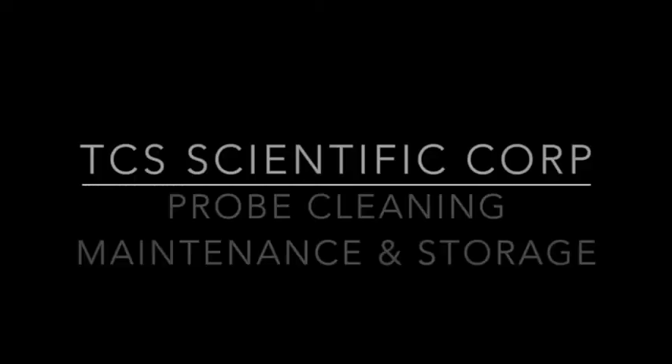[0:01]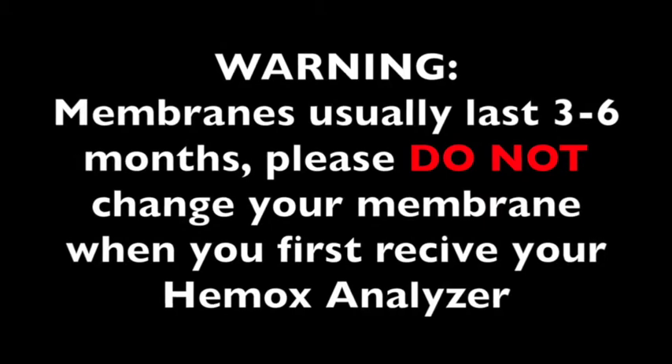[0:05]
How to perform probe cleaning, maintenance, and storage. Membranes usually last 3 to 6 months. Please do not change your membrane when you first receive your HemOx analyzer. It is a fresh membrane.
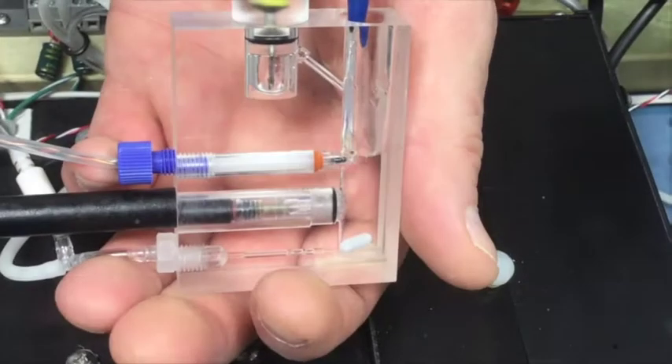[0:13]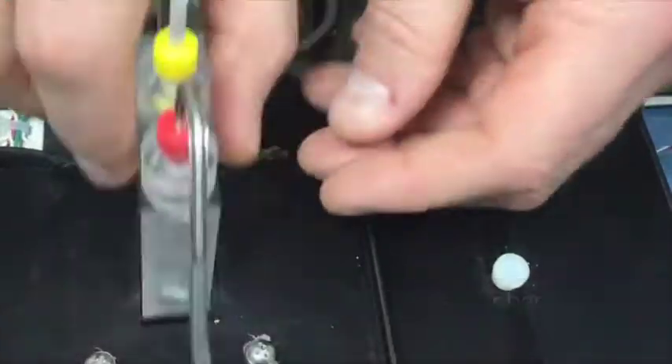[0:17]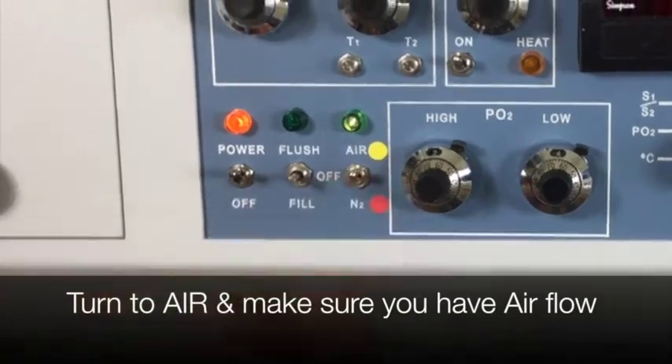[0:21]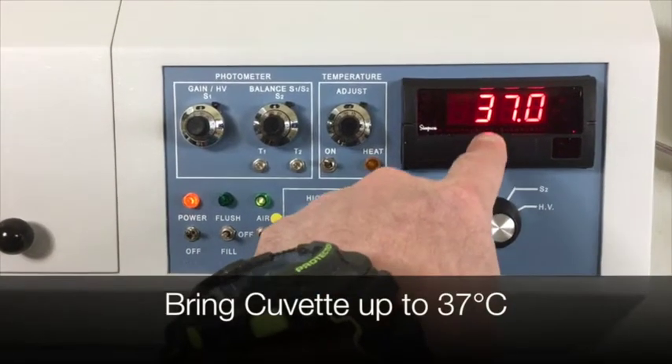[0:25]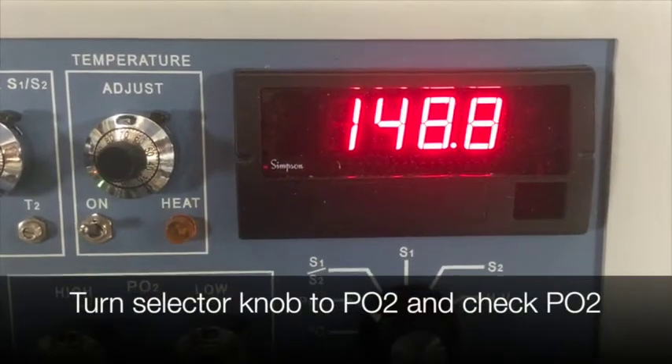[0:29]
How you know your membrane is going bad. Fill your cuvette with distilled water and make sure that your stir bar is in and stirring. Make sure that you have your switch turned to air and that your air is on. After about 30 minutes, your temperature should have stabilized at 37 degrees Celsius. Now turn to PO2 and make sure that that is stabilized as well.
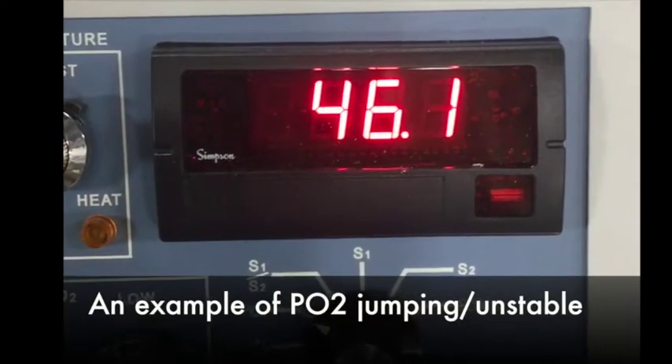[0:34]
This is an example of a PO2 jumping or unstable. Do not remove the oxygen probe from the cuvette. In fact, it is better and easier to do while your probe is still in the cuvette. Just be careful not to touch or hit the back of the probe, the brown part that is sticking out of the cuvette.
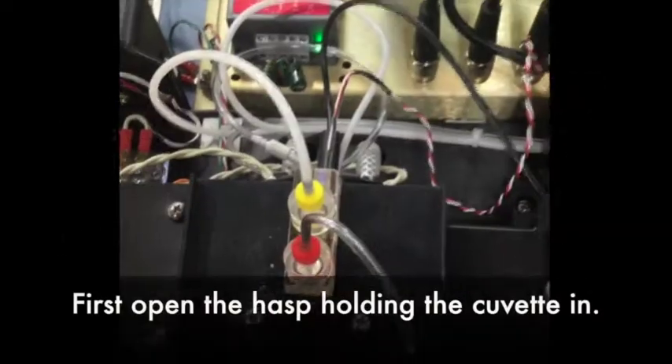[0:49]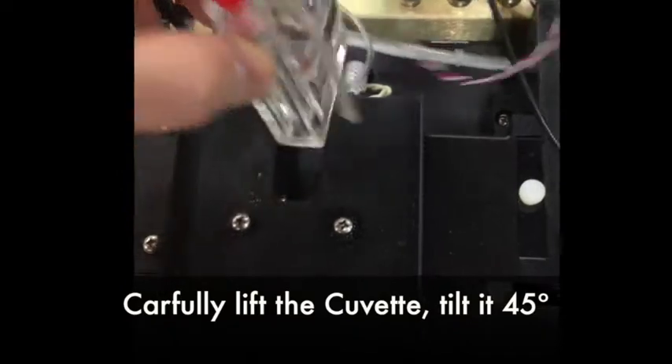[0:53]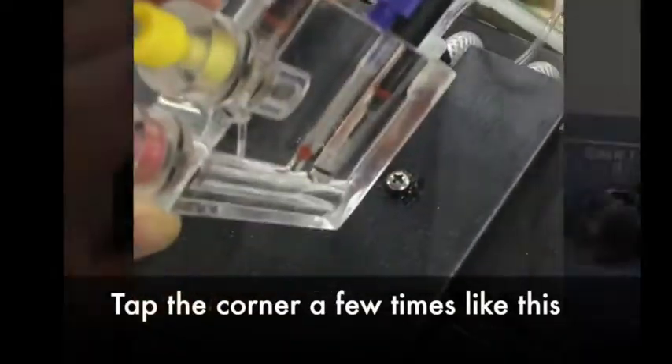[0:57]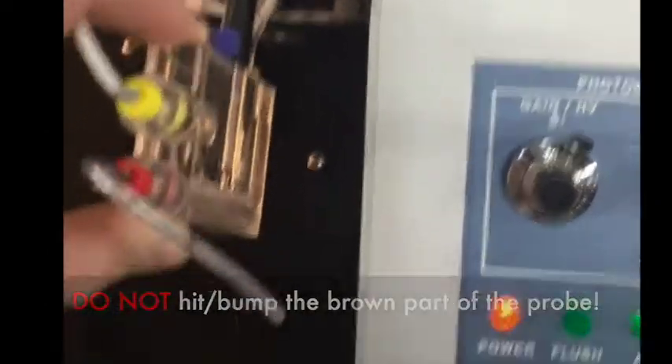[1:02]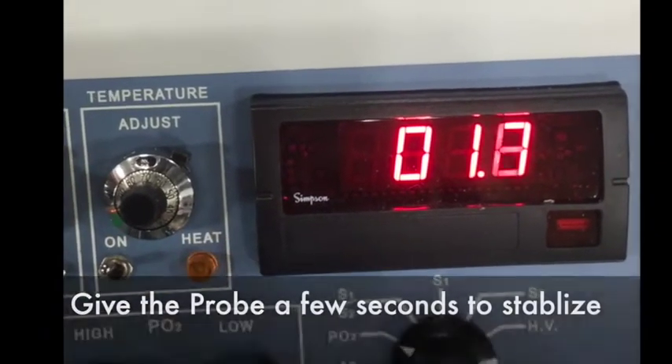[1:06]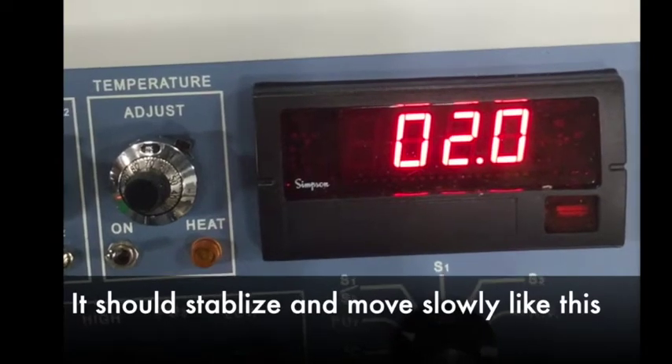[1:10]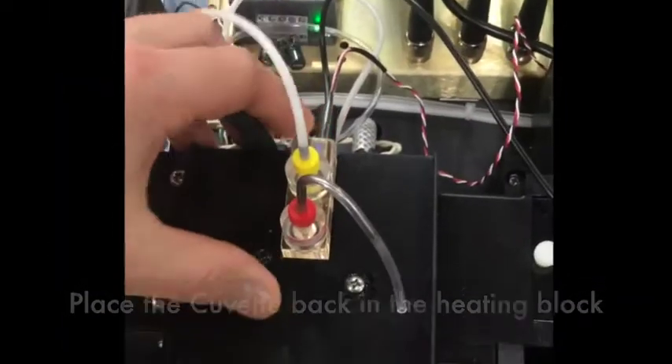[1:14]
First, open the hasp holding the cuvette in. Carefully lift the cuvette out and tilt it 45 degrees. Tap the corner a few times just like this. Do not hit or bump the brown part of the probe. Give the probe a few seconds to stabilize. It should stabilize and move slowly like this. Place the cuvette back in the heating block, close the hasp, and you're done.
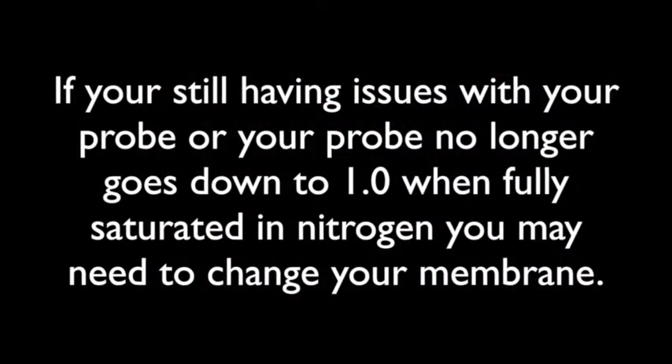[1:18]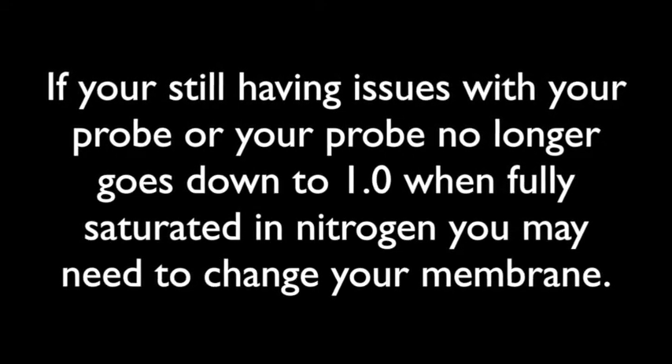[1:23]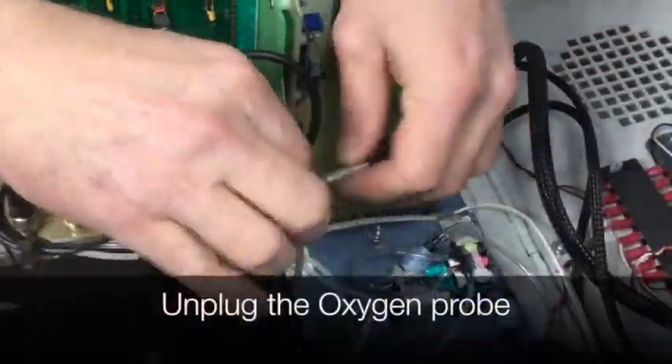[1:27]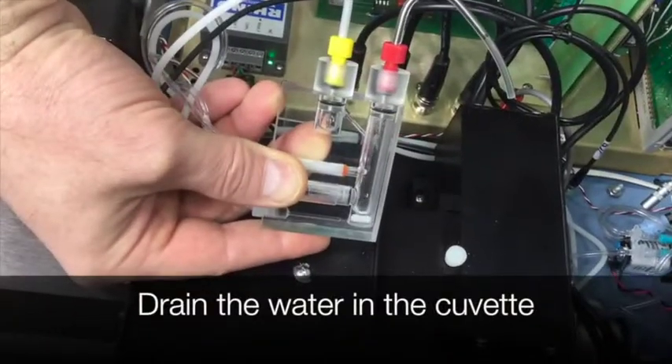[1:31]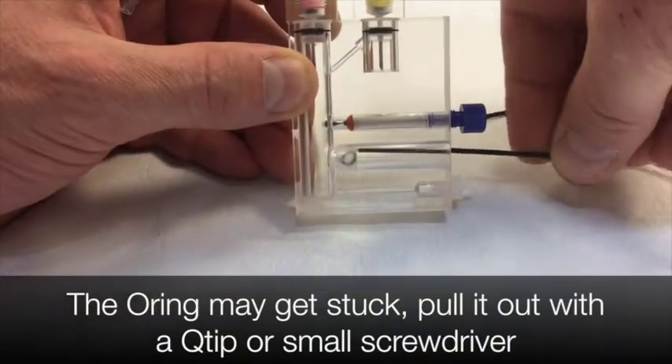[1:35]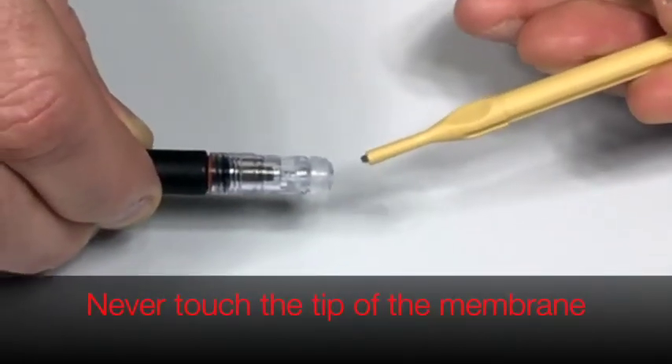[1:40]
If you're still having issues with your probe, or your probe no longer goes down to 1.0 when fully saturated in nitrogen, you may need to change your membrane. Open lid. First, unplug the oxygen probe. Lift the cuvette out of the slot. Drain the water in the cuvette. Remove the probe. The O-ring may get stuck. Pull it out with a Q-tip or a small screwdriver. Never touch the tip of the membrane.
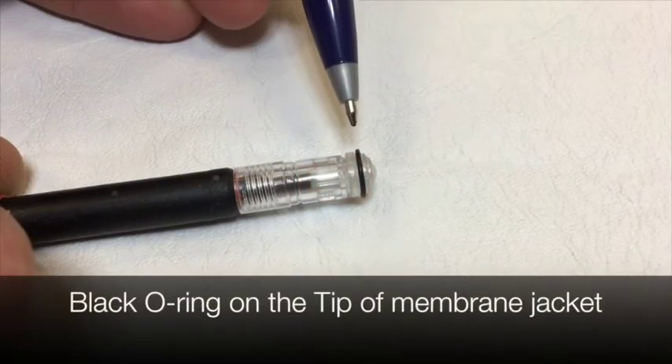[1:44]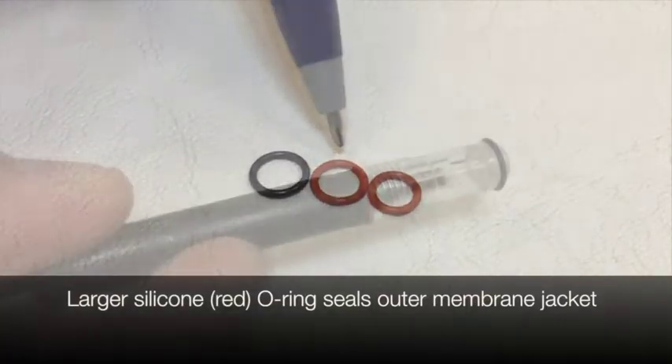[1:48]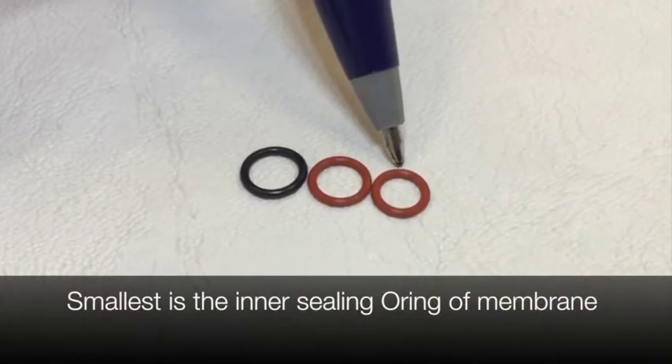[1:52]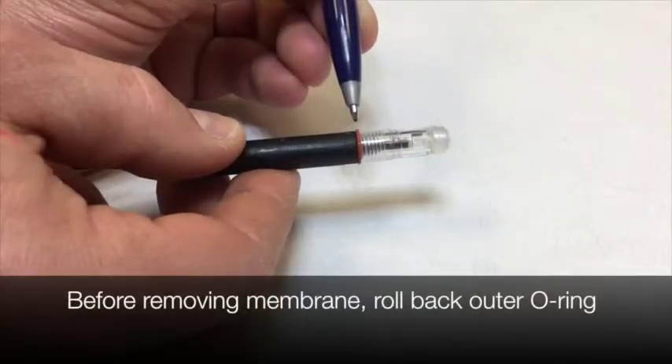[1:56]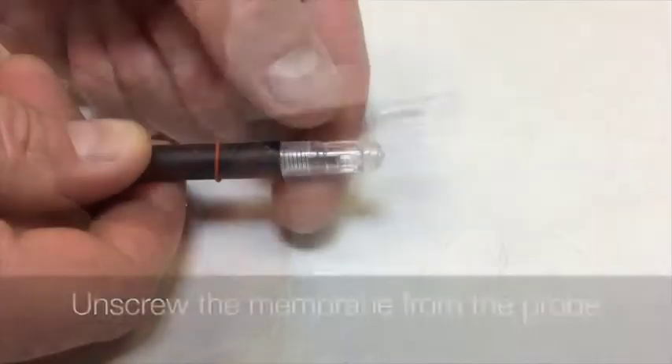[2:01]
There are 3 O-rings for your oxygen electrode. The black one goes on the tip of the oxygen electrode. The larger of the silicone O-rings seals the outside of the membrane jacket. The smallest of the silicone O-rings is the inner seal for the membrane jacket. Before removing the membrane jacket, roll back the larger silicone O-ring. Unscrew the membrane from the probe.
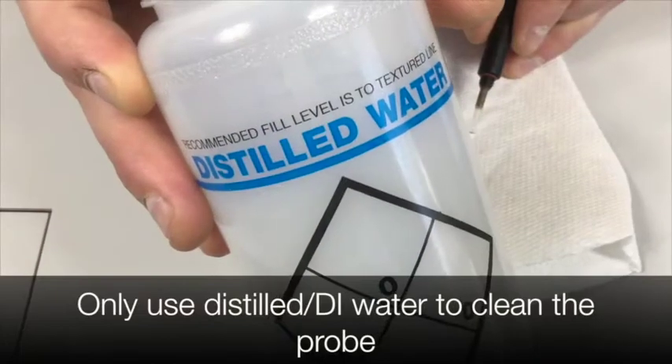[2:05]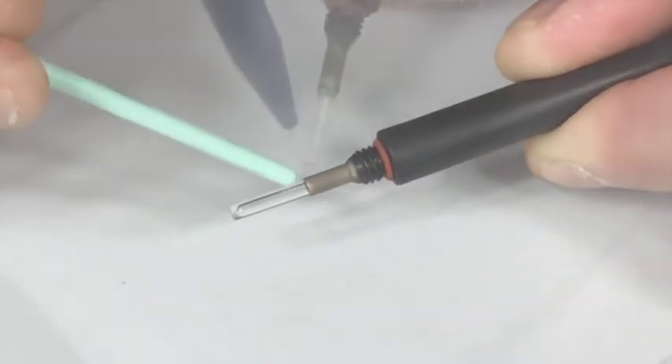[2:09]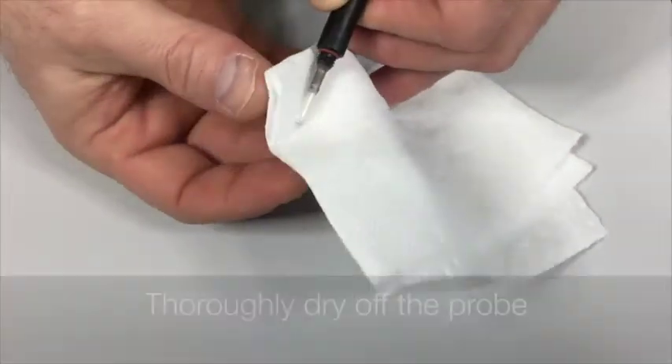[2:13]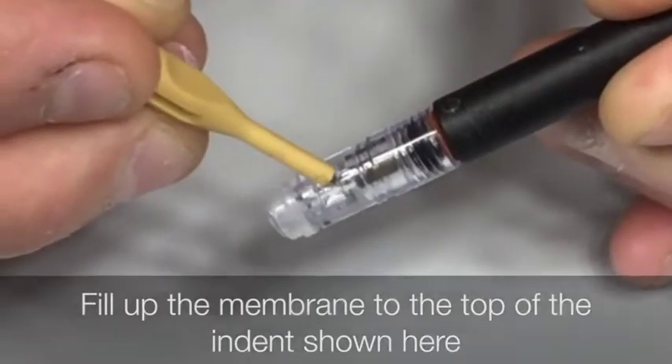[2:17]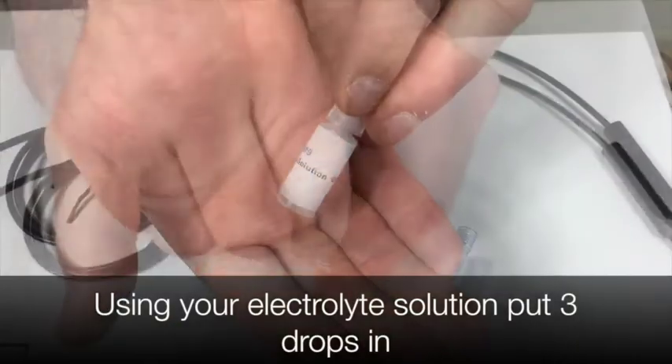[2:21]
Only use distilled or DI water to clean the probe. Never get water in this area. Clean the tip with water. Thoroughly dry off the probe. Fill up the membrane to the top of the indent shown here. Using your electrolyte solution, put 3 drops in.
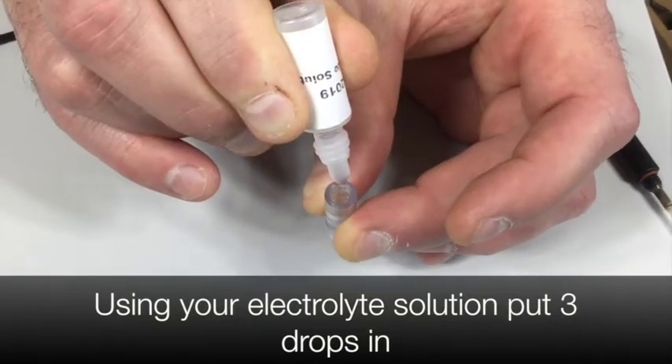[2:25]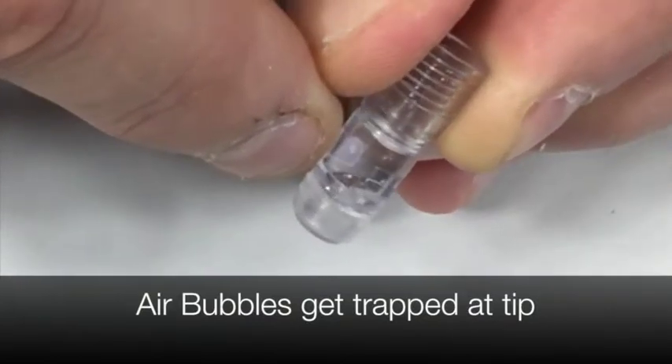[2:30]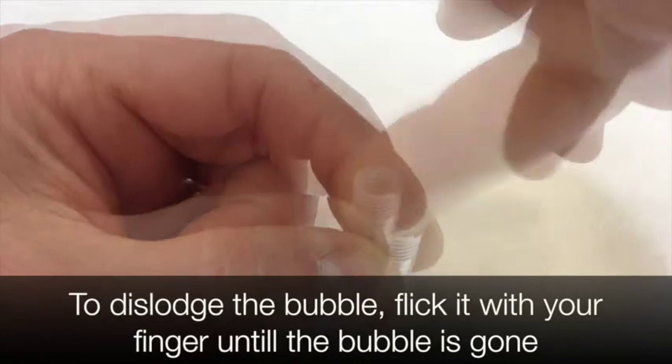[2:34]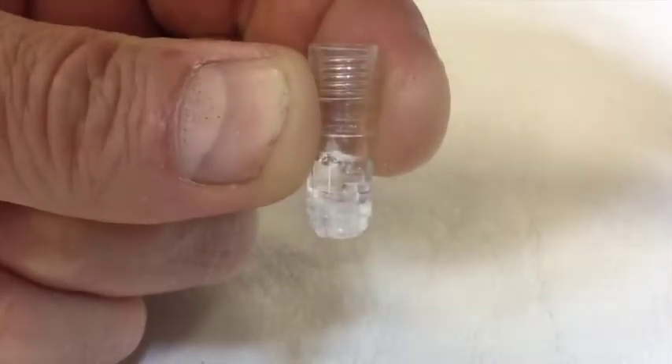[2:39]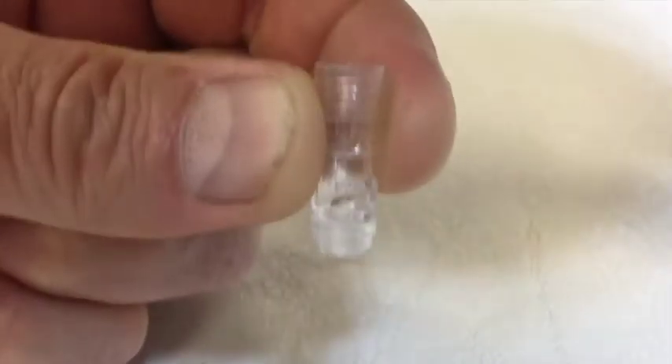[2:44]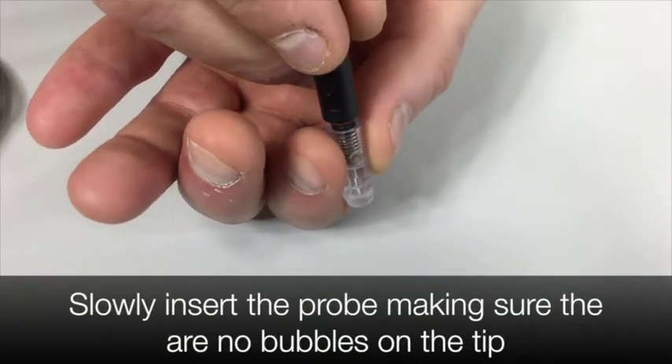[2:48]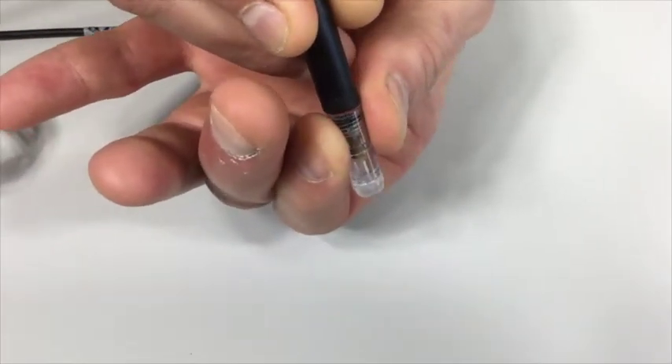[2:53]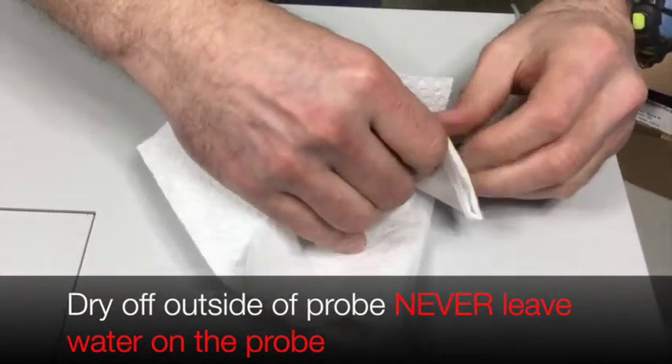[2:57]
You will always get an air bubble trapped at the tip of the membrane. Using your fingernail, tap the top of the membrane jacket until you dislodge all the bubbles as shown in the video. Slowly insert the probe, making sure that there are no air bubbles on the tip. Screw the membrane onto the probe and make sure the solution does not overflow. Dry off the probe. Never leave water on the probe.
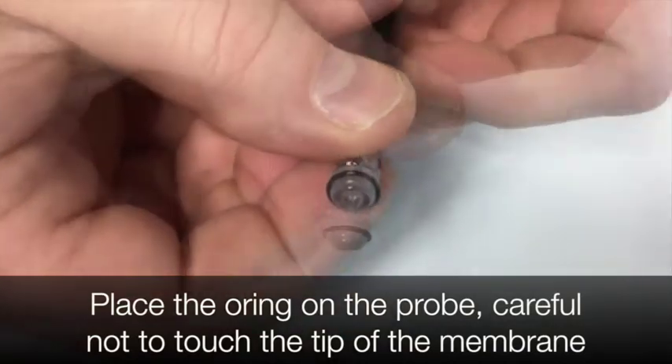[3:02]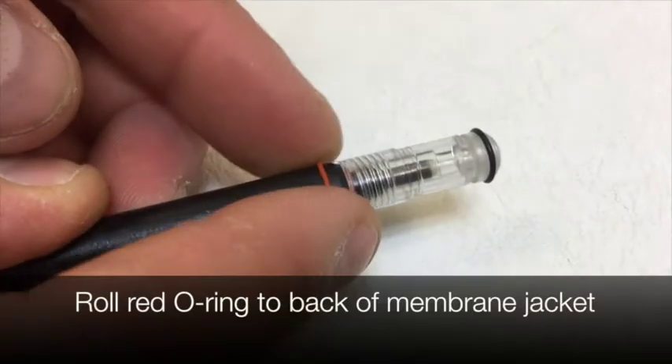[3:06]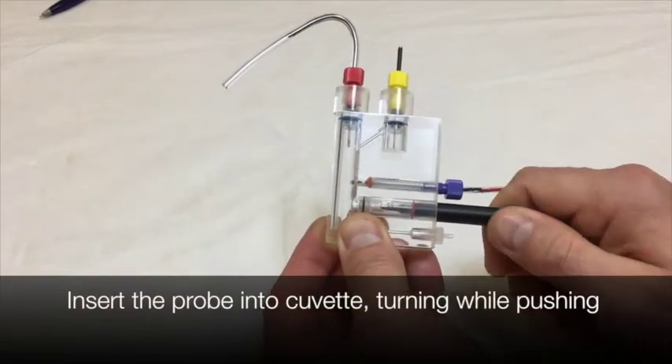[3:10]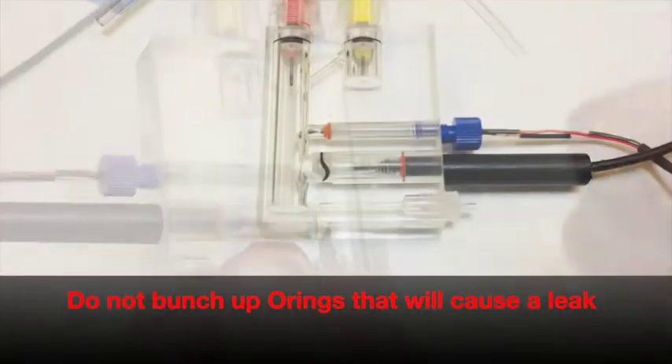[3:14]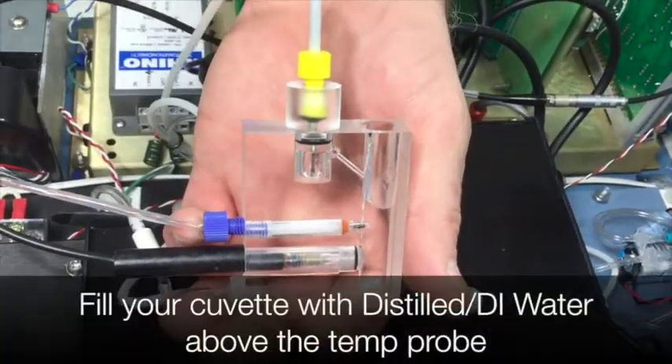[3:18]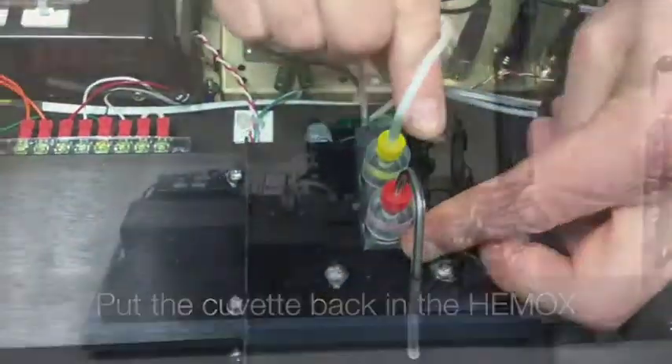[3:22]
Place the black O-ring around the tip of the membrane jacket, making sure not to touch the membrane with your fingertips. Roll the red silicone O-ring forward until it gets into the groove of the back of the silicone jacket. Insert the probe into your cuvette, making sure you turn slowly as you push it in. Make sure that you do not bunch up the O-rings. That will cause a leak. Fill your cuvette with distilled water above the temperature probe. Put the cuvette back in the HemOx.
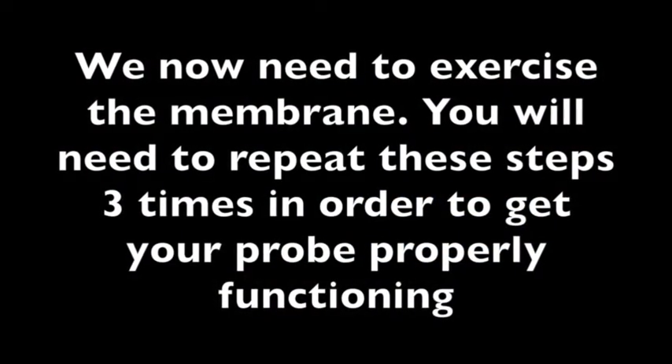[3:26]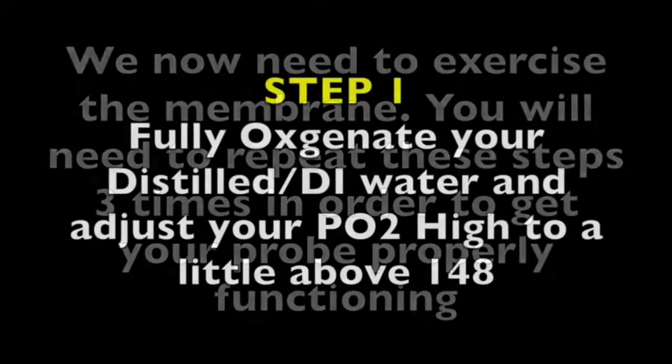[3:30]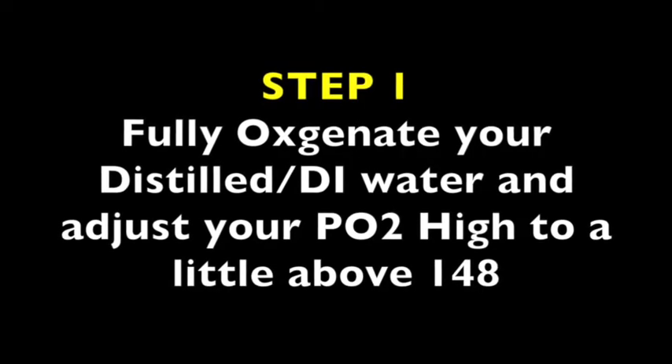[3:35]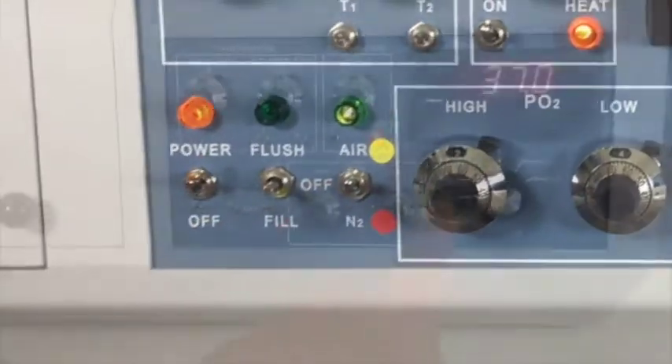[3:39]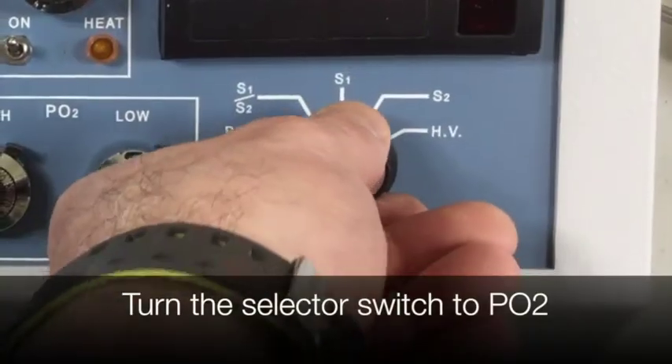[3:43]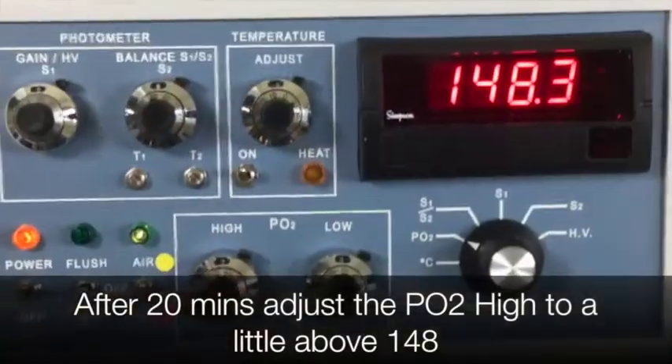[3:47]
Close lid. We now need to exercise the membrane. You will need to repeat these steps 3 times in order to get your probe to function properly. Step 1. Fully oxygenate your distilled or DI water and adjust your PO2 high to a little above 148. Switch to air and oxygenate for 20 minutes. While you're waiting, make sure the temperature gets to 37 degrees Celsius. Turn the selector switch to PO2. After 20 minutes, adjust the PO2 high to a little above 148.
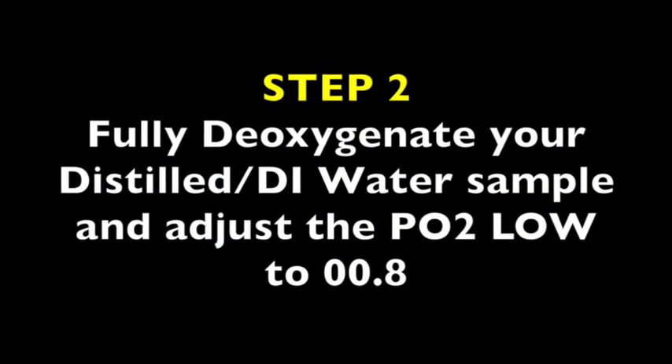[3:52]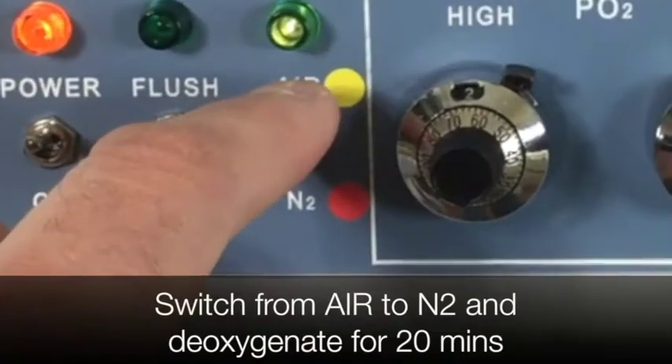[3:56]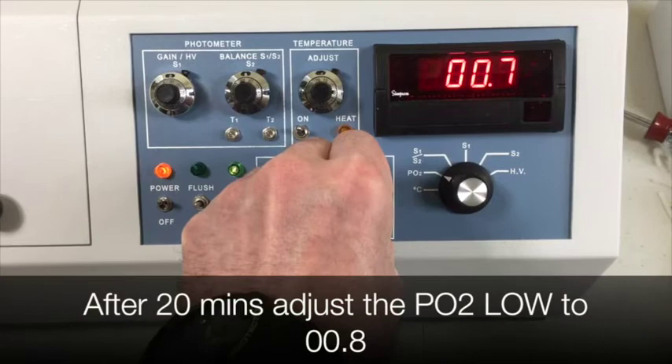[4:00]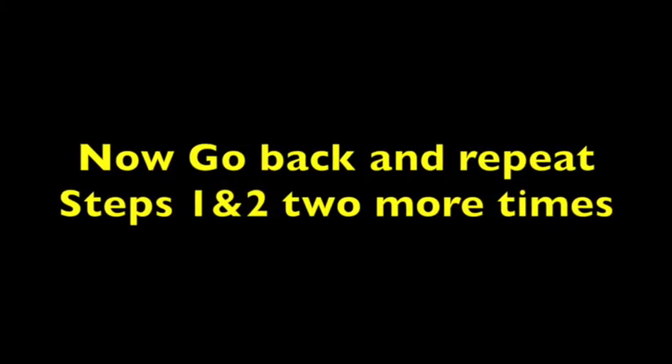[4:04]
Step 2. Fully deoxygenate your distilled or DI water sample and adjust the PO2 low to 0.8. Switch from air to nitrogen and deoxygenate for 20 minutes. After 20 minutes, adjust the PO2 low to 0.8. Now go back and repeat steps 1 and 2 two more times.
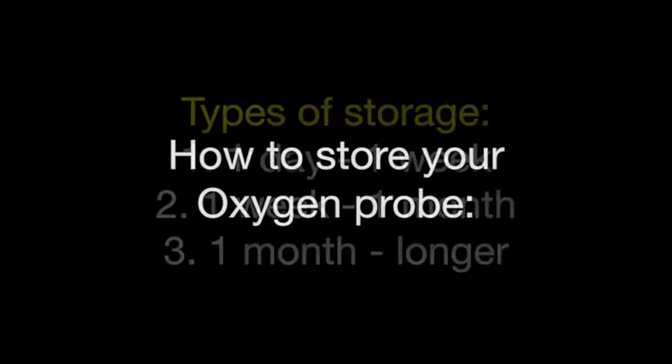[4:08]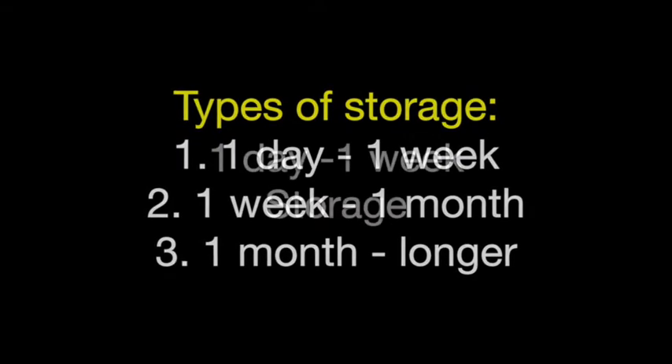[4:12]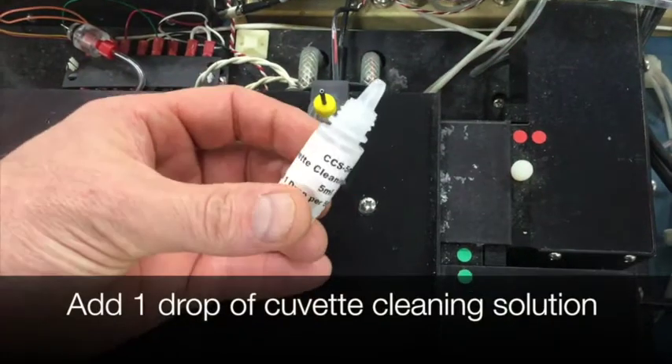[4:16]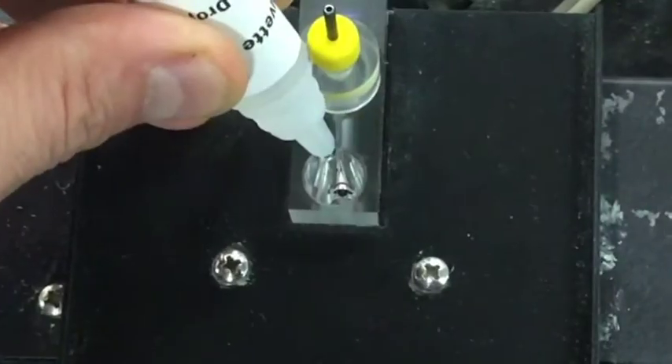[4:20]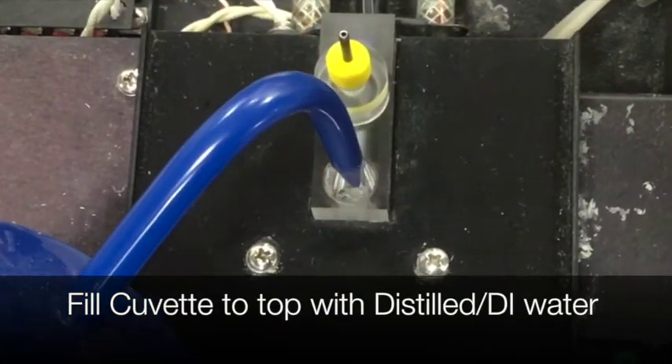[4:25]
How to store your oxygen probe for a long period of time. There are 3 types of storage. 1 day through 1 week storage. Drain the cuvette and make sure there's nothing in it. Then add 1 drop of cuvette cleaning solution. Then fill the cuvette with distilled or DI water all the way to the top of the cuvette and make sure you leave off the cap.
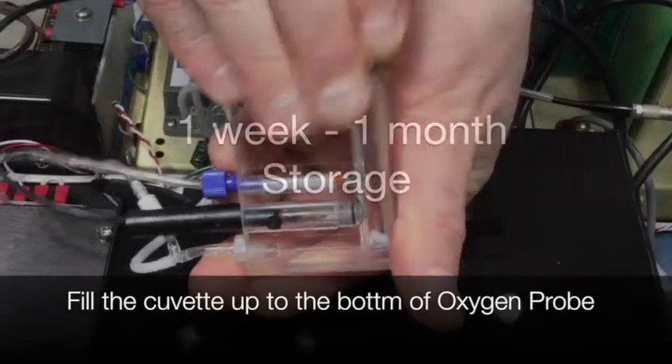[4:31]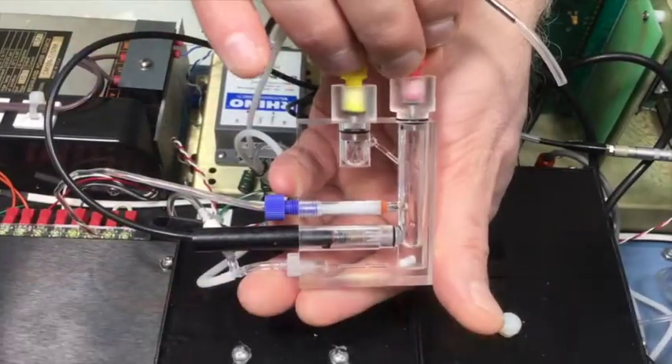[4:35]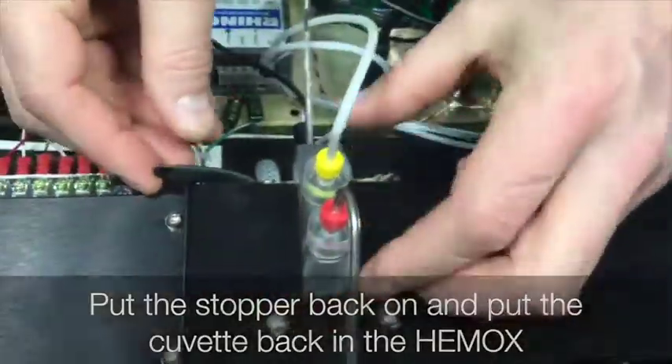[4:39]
1 week to 1 month storage. Fill the cuvette up to the bottom of the oxygen probe. Put the stopper back on and put the cuvette back in the HemOx. 1 month or longer storage.
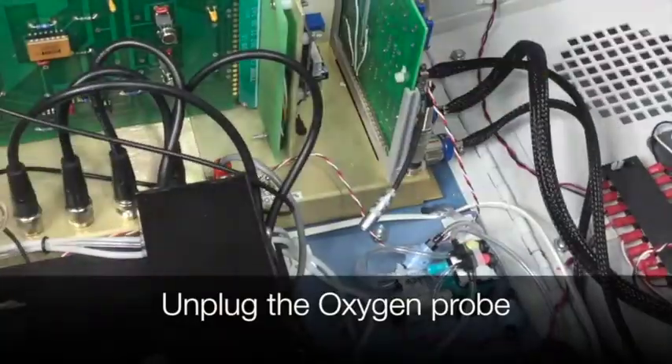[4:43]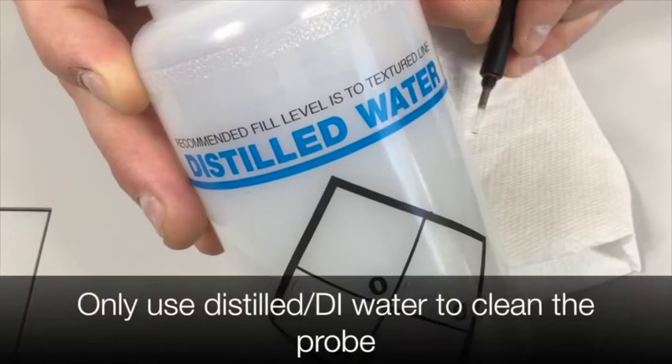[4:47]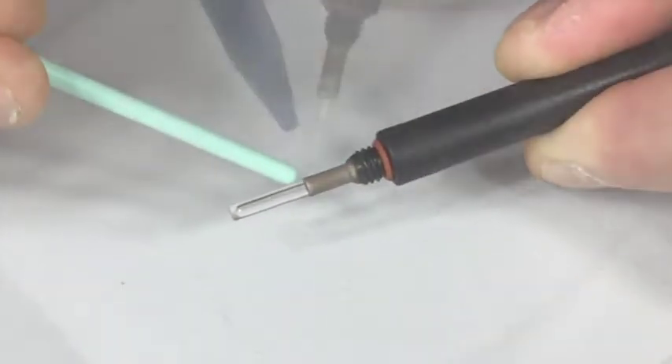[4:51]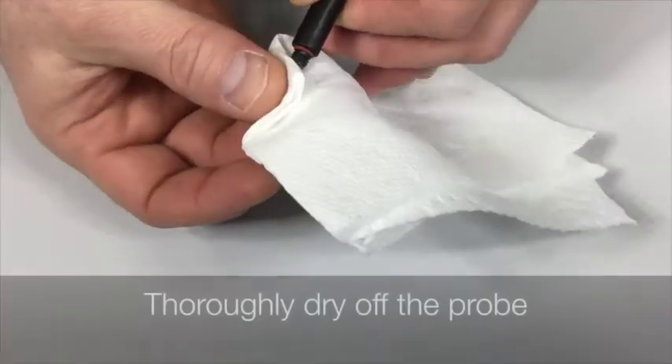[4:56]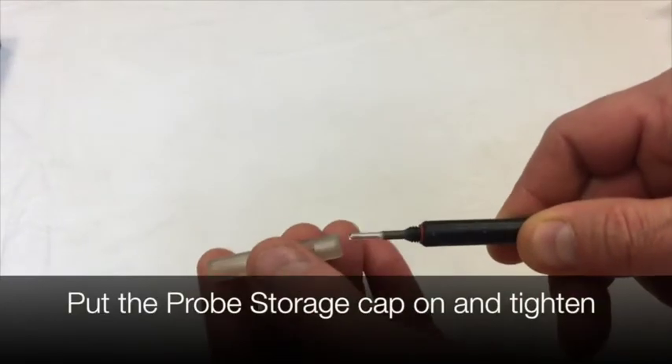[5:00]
First, unplug the oxygen probe. Unscrew the membrane from the probe. Only use distilled or DI water to clean the probe. Never get water in this area. Clean the tip with water. Thoroughly dry off the probe. With a dry probe, put the probe storage cap on and tighten.
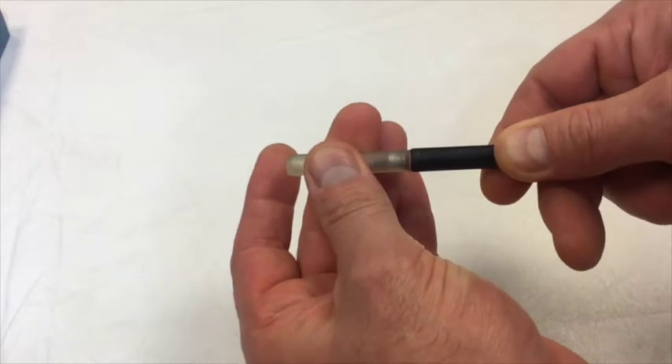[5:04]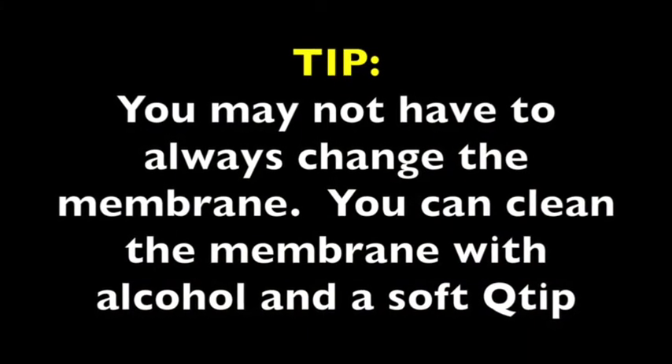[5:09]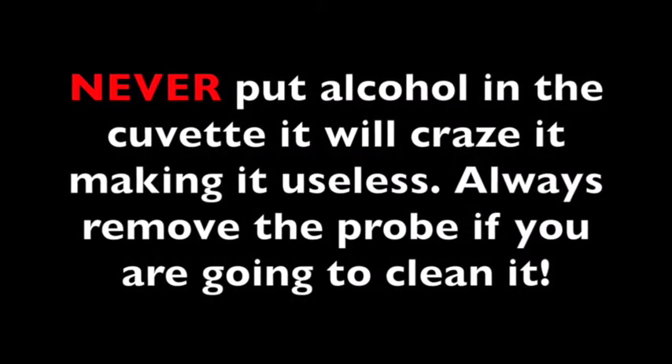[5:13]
You may not have to always change the membrane. You can clean the membrane with alcohol and a soft Q-tip. Never put alcohol in the cuvette. It will craze it, making it useless. Always remove the probe first.
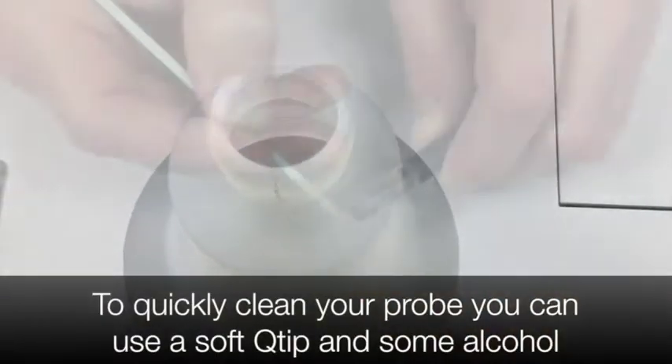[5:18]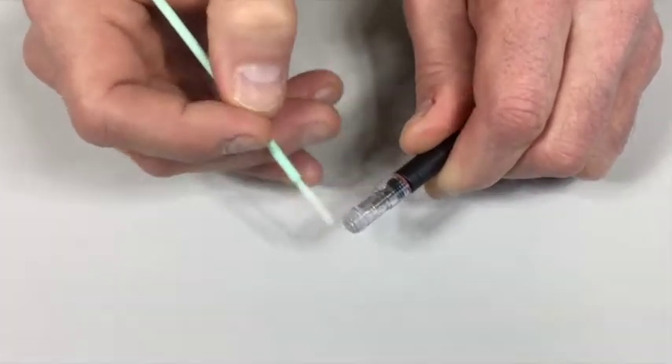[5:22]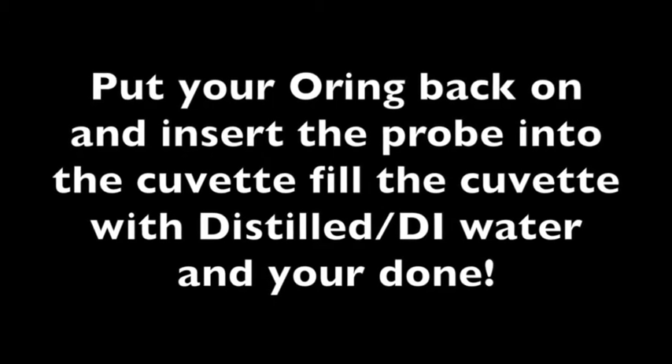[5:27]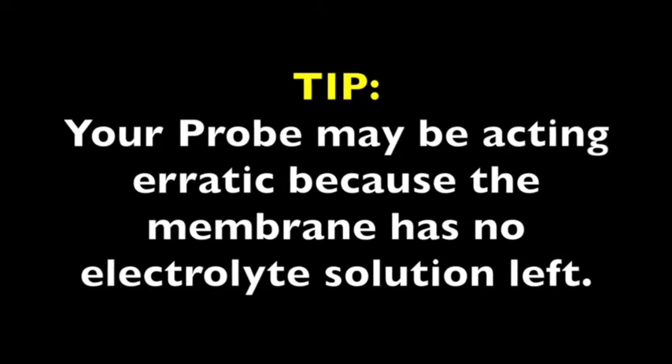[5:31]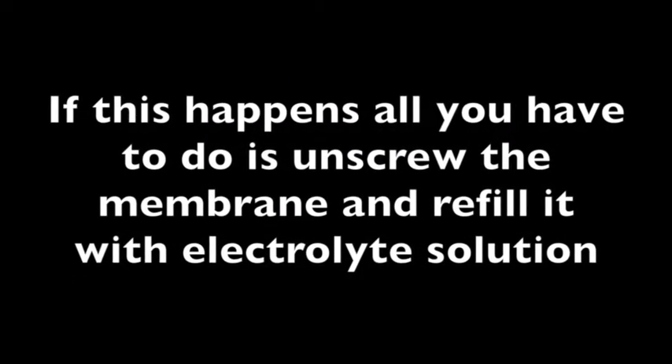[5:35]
To quickly clean your probe, you can use a soft Q-tip and some alcohol. Gently rub the tip and turn the probe as you clean. Put your O-ring back on, insert the probe into the cuvette, fill the cuvette with distilled or DI water, and you're done. Your probe may be acting erratic because the membrane has no electrolyte solution left in it. If this happens, all you have to do is unscrew the membrane and refill it with electrolyte solution.
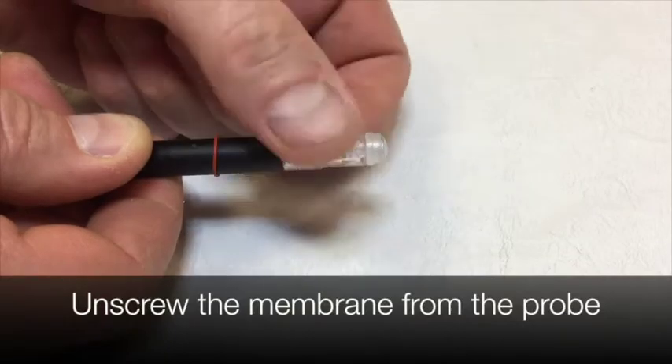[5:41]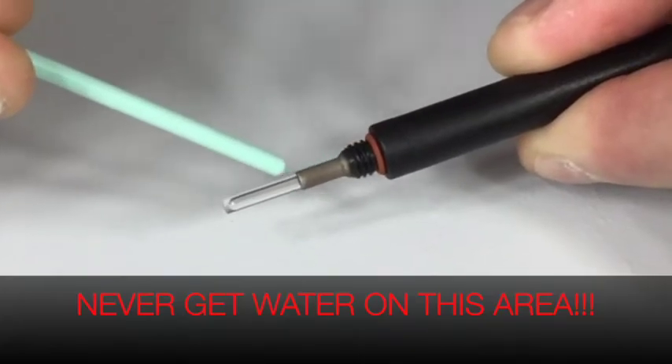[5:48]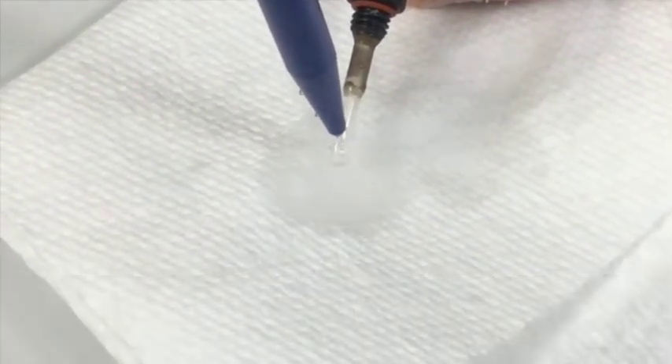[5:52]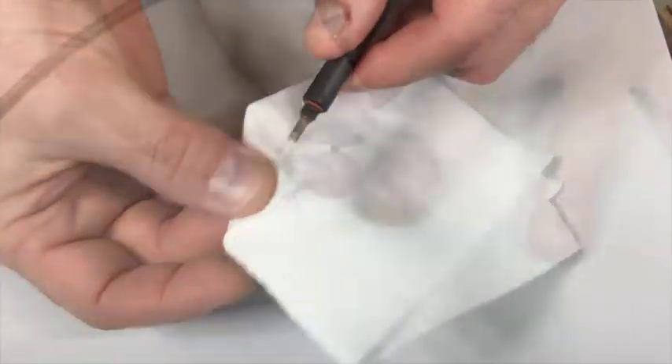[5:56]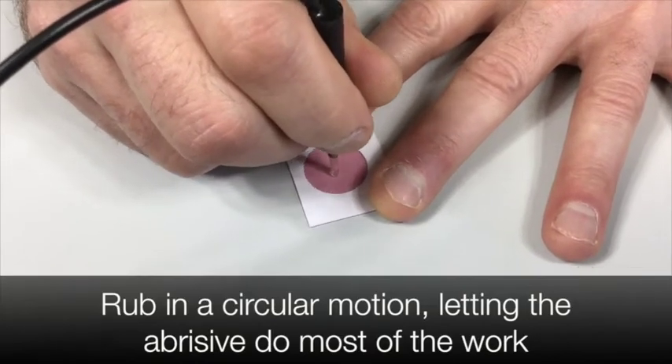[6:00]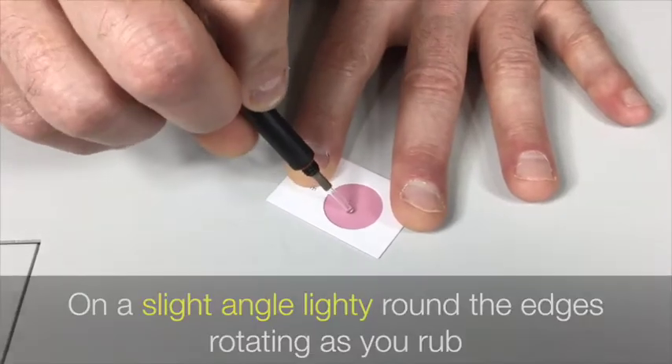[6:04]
How to clean a dirty probe if everything else fails to give you good results. Unscrew the membrane from the probe. Only use distilled or DI water to clean the probe. Never get water in this area. Clean the tip with water. Thoroughly dry off the probe. On a flat surface, lightly press down on the abrasive pad. Rub in a circular motion, letting the abrasive do most of the work. On a slight angle, lightly round the edges, rotating as you rub.
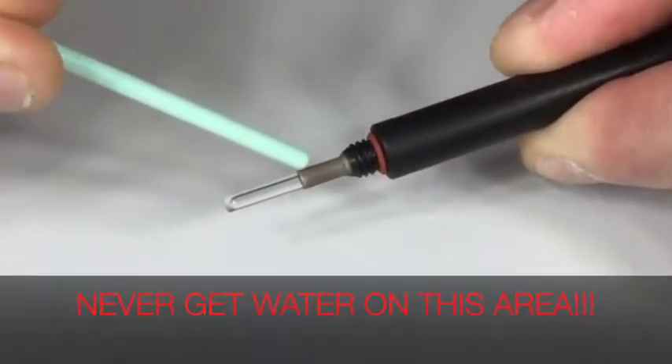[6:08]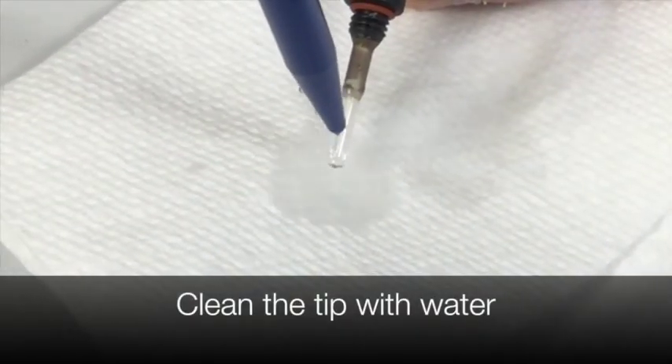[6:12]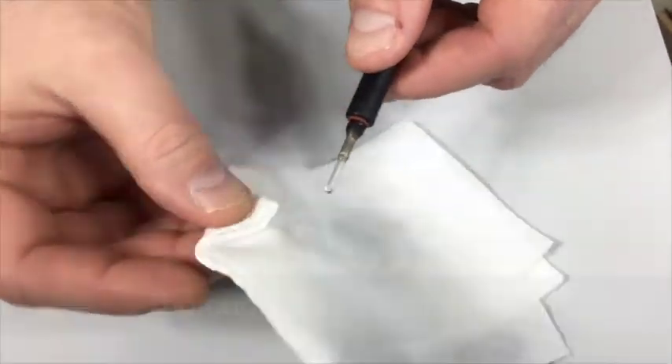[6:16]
Only use distilled or DI water to clean the probe. Never get water in this area. Clean the tip with water. Thoroughly dry off the probe. Now repeat the steps for replacing a new membrane.